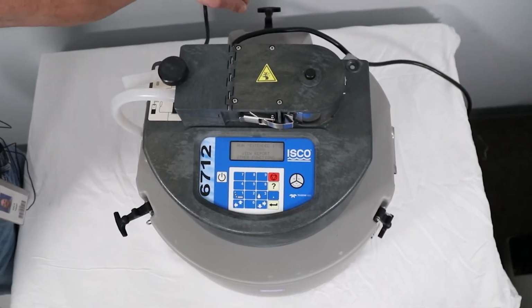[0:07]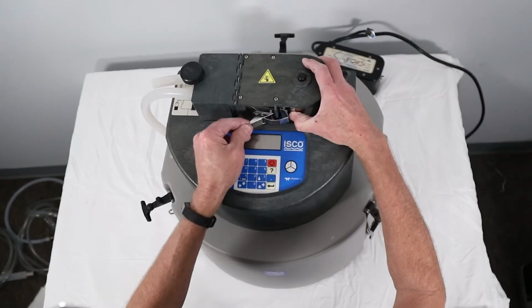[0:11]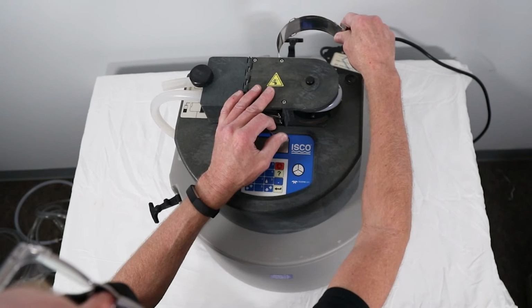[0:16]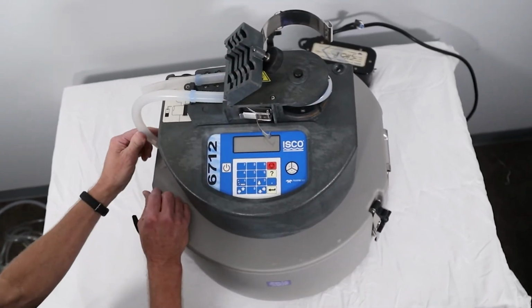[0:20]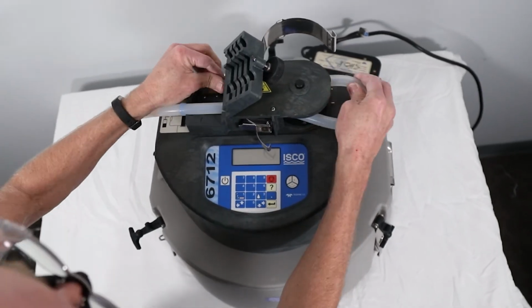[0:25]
Remove the power from the 6712. Open the pump band latch and rotate the band out of the way. Loosen the liquid detector cover thumb screw. Pull the pump tubing off of the bulkhead fitting and pull the pump tubing out of the sampler head.
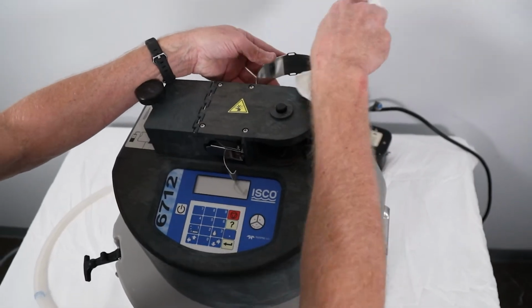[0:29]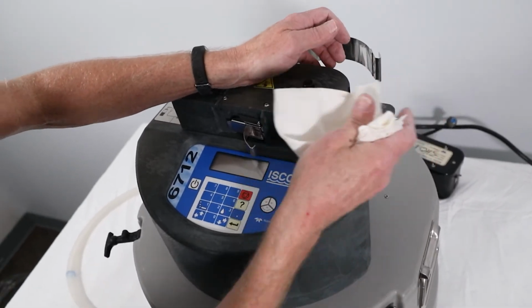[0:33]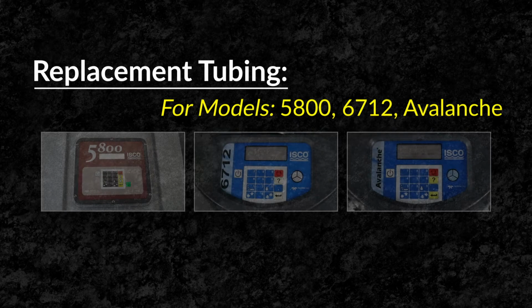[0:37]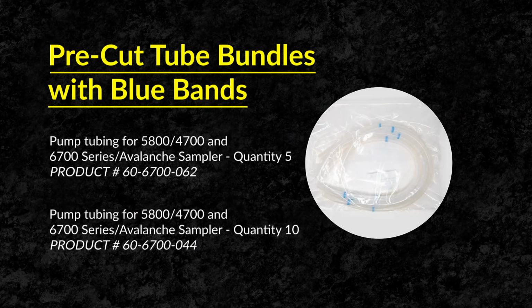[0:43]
Remove any silicone deposits from the pump rollers or pump band. Replacement tubing for models 5800, 6712, and Avalanche come in packages of pre-cut tube bundles.
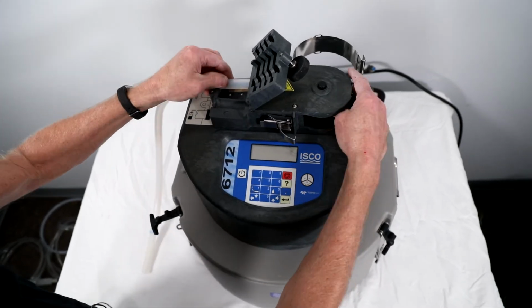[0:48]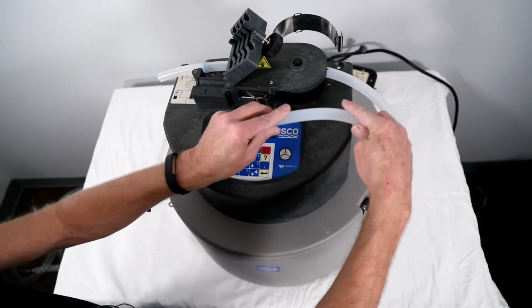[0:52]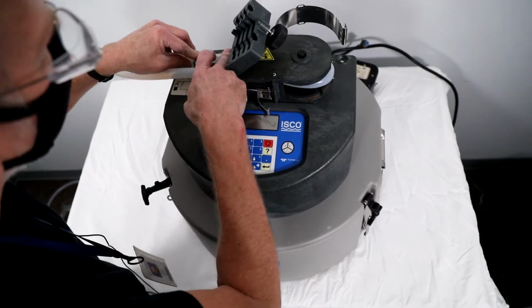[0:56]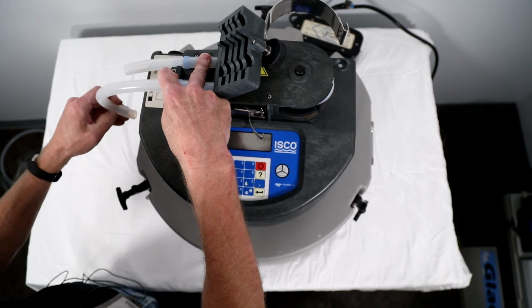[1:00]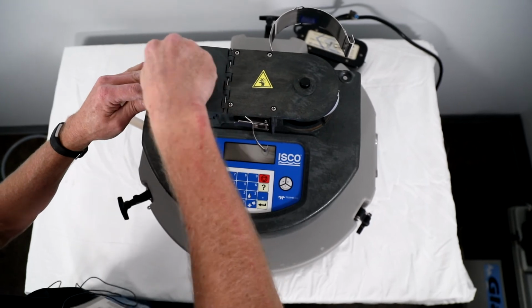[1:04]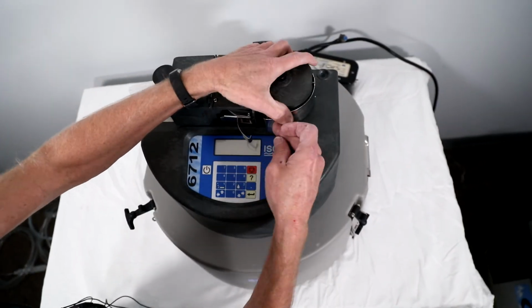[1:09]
Insert the new pump tubing into the sampler head, making sure that the blue band closest to the end of the new pump tube fits into the groove for connection to the suction line. Connect the discharge side of the pump tubing to the bulkhead fitting on the center section. Close the liquid detector cover, hand tighten the thumb screw, and re-secure the pump band latch.
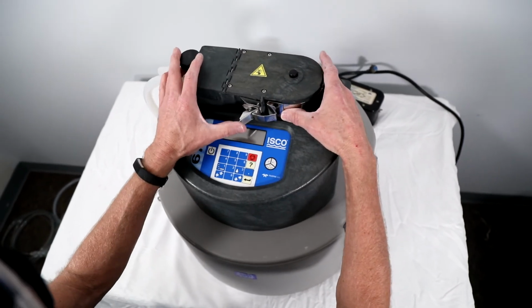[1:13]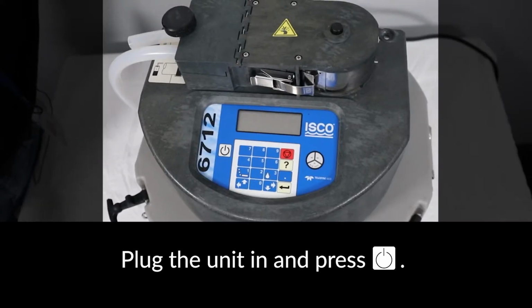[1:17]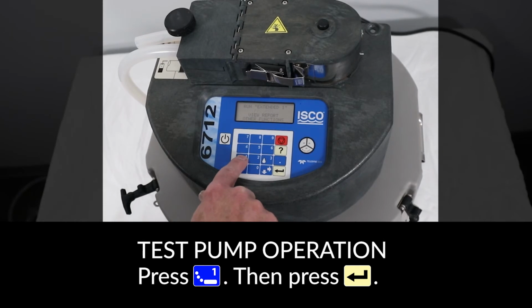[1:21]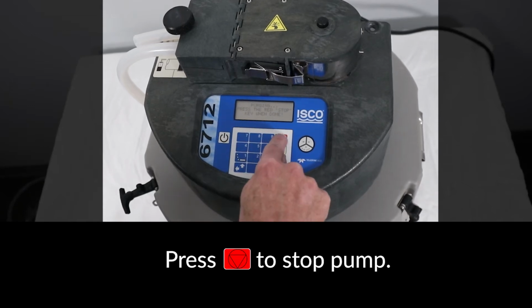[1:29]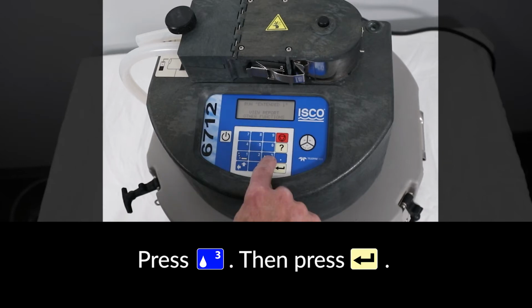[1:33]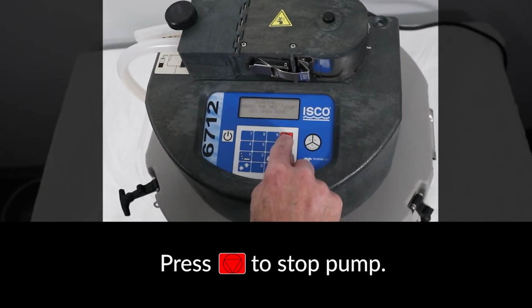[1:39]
Reapply power. To test the pump operation on the new tube, press the 1 button on the control panel to run the pump in reverse direction, and press Enter. Press the red stop key to stop the pump. Next, press the number 3 button, followed by Enter, to run the pump in the forward direction. Then press the red stop key to stop the pump.
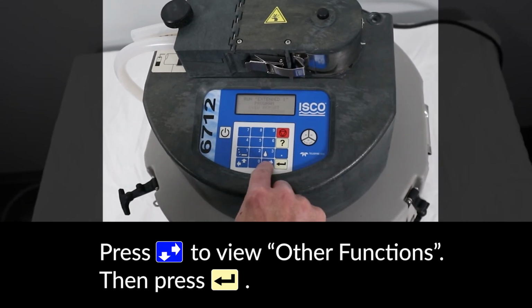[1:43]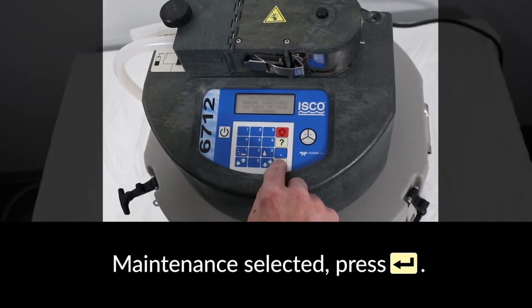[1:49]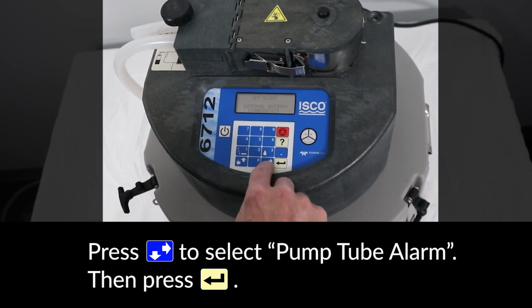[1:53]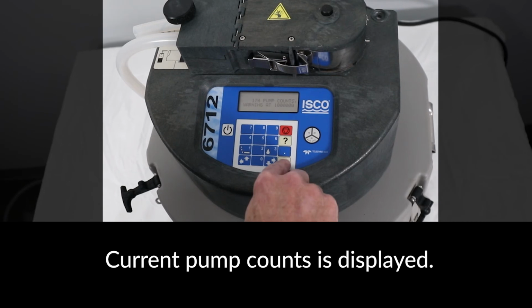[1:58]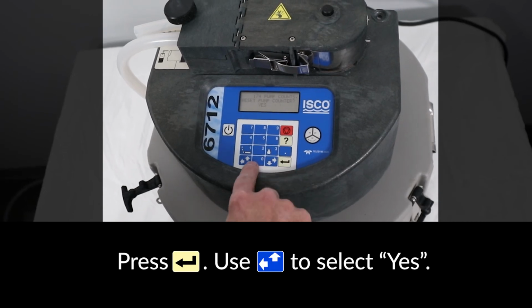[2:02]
To reset the tubing counter, press the down arrow key to get other functions blinking and press Enter. With maintenance selected, press Enter. Use the arrow keys to select pump tube alarm and press Enter. The current pump counts limit is displayed. Press Enter, then select Yes to reset the pump counter.
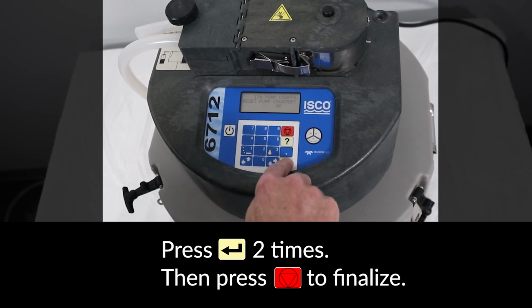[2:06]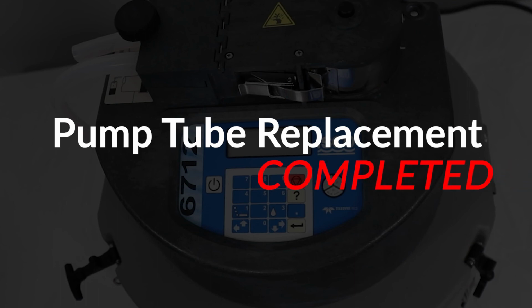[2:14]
Then press Enter 2 more times, followed by the red stop key to finalize the reset. Pump tube replacement is now complete.